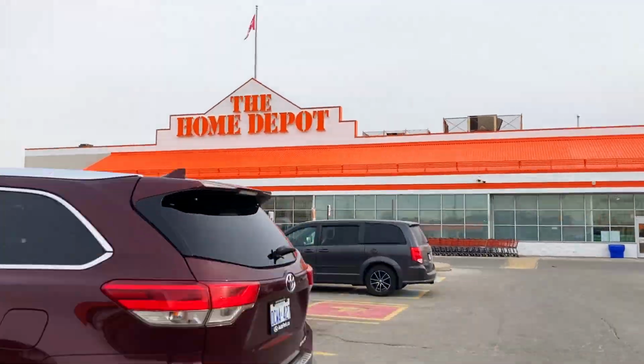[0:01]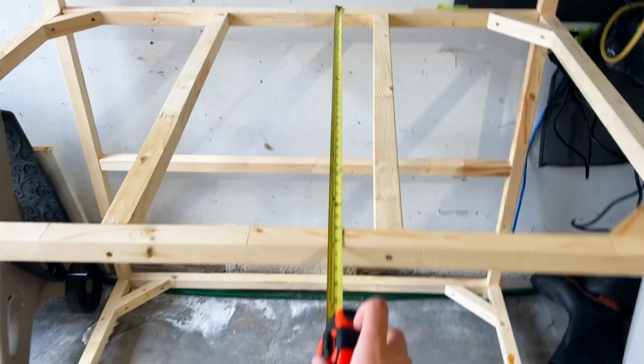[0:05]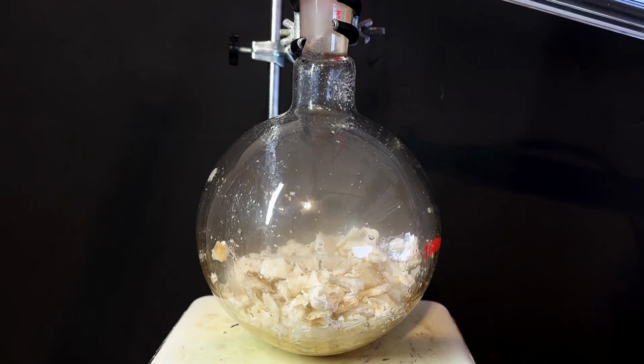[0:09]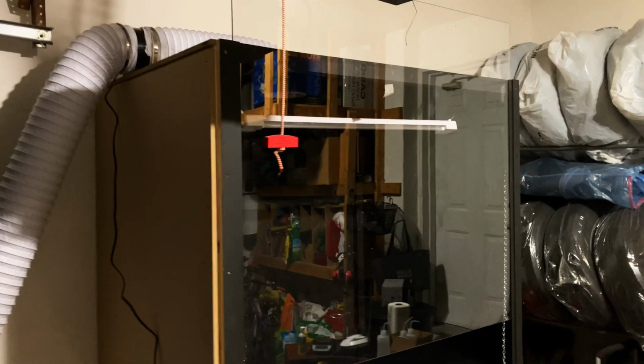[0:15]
So for a while now, I wanted to get an actual functioning fume hood to do my chemistry experiments in, because many of them were actually kind of dangerous with a bunch of toxic vapors. I decided to build a massive one entirely from scratch, with the help of some trips to Home Depot. So let me show you how it's done.
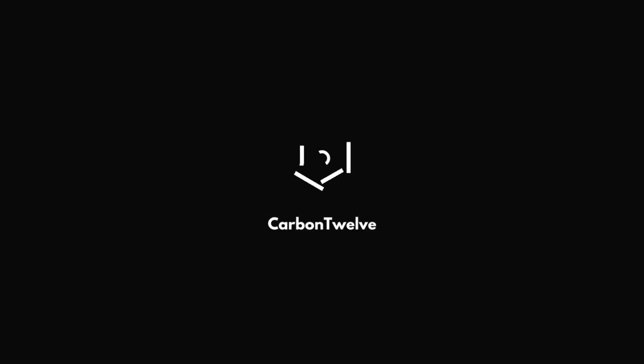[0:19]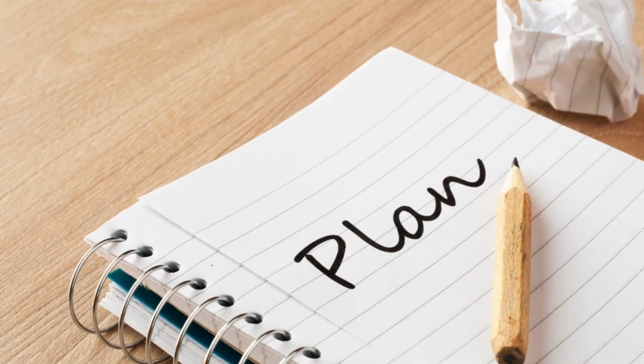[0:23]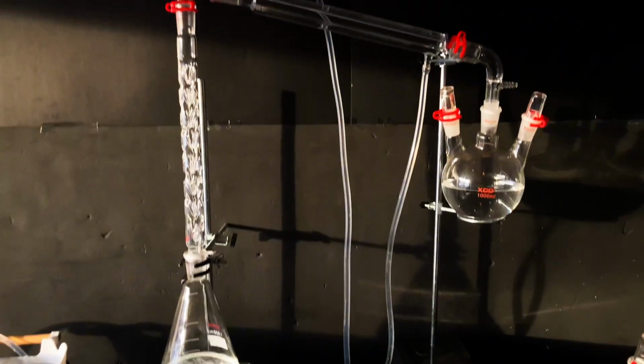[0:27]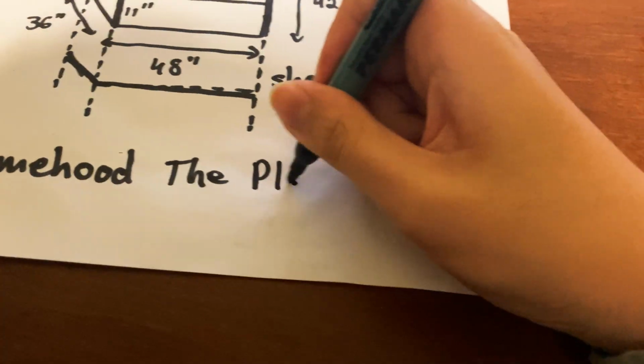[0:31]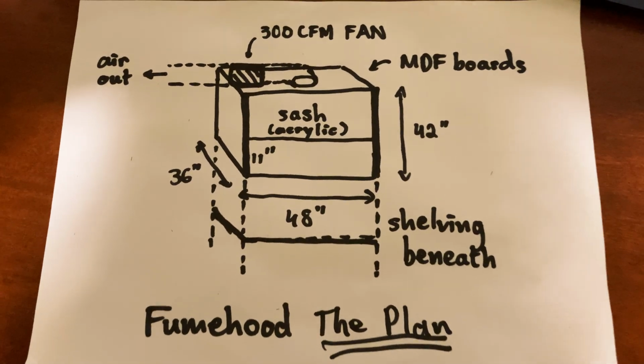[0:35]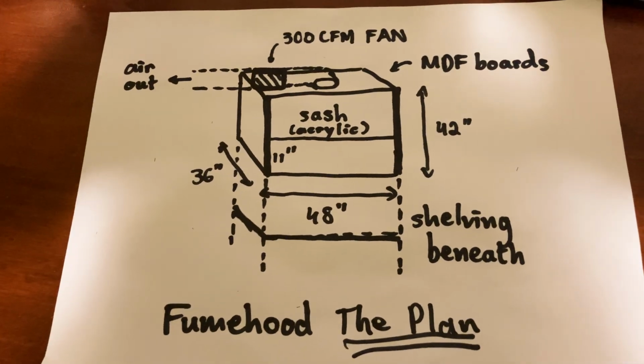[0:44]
First off, I needed a plan for my fume hood, and I decided that I wanted mine to be huge in order to be able to fit in a full fractional distillation setup. Thus, after scribbling and brainstorming a bit on paper, I came up with this as the game plan, which is a rectangular prism with 42 inches as its height, a width of 48 inches, and a depth of 36 inches. This is definitely very spacious for a regular fume hood.
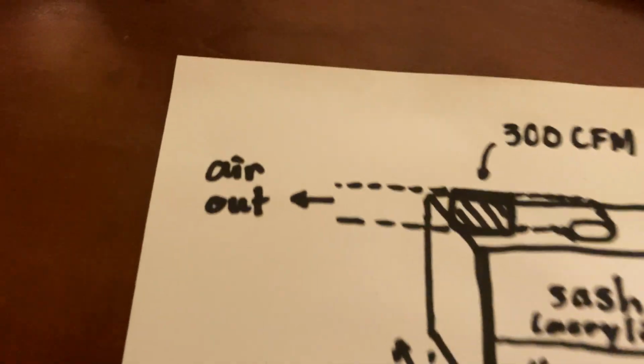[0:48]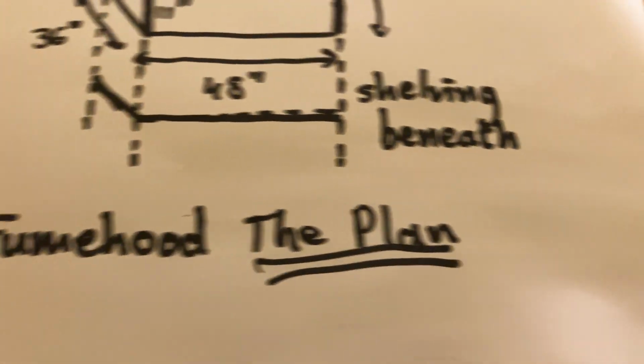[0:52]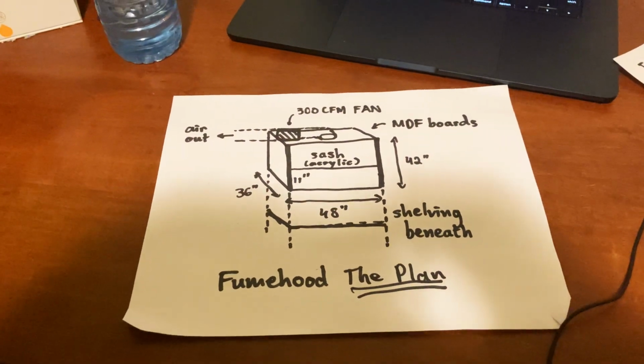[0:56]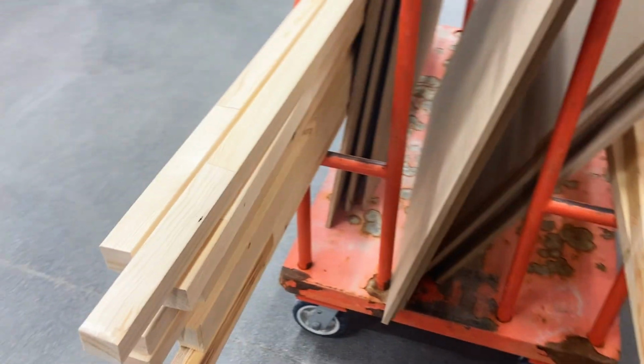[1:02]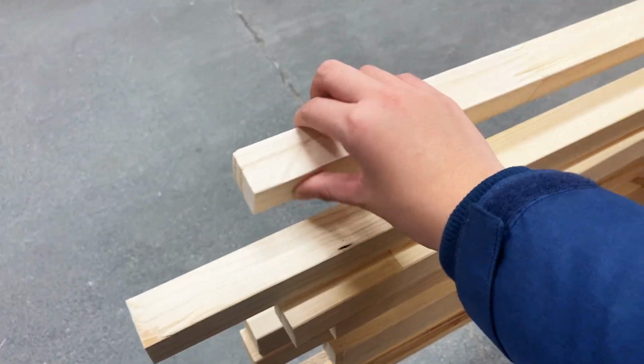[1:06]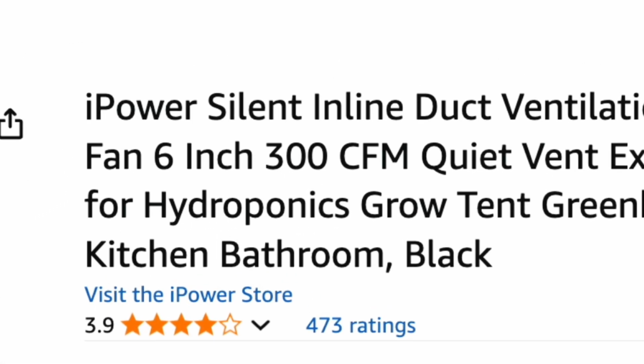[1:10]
Planning this out took longer than some of my actual experiments and more brain power, not gonna lie. Honestly, I probably should have studied architecture. I equally wanted to use some galvanized square steel for this project, but I realized it's too expensive. Anyways, other than the fiberboards and wooden beams that I needed to get from Home Depot, I also needed to get the most important part of the fume hood. I went with a 300 CFM fan due to the massive size of my fume hood.
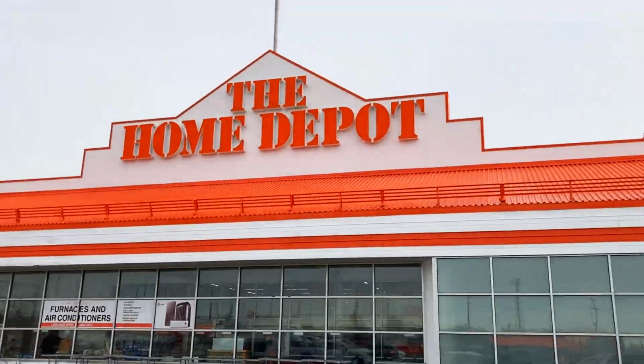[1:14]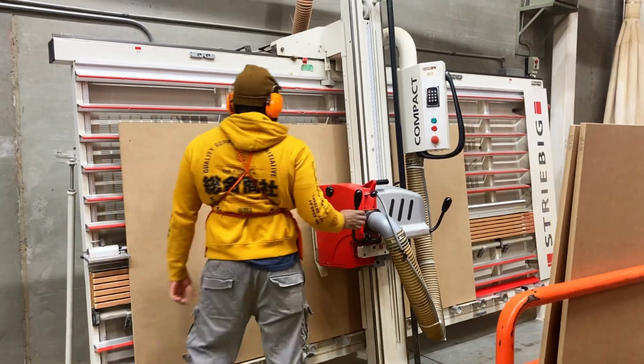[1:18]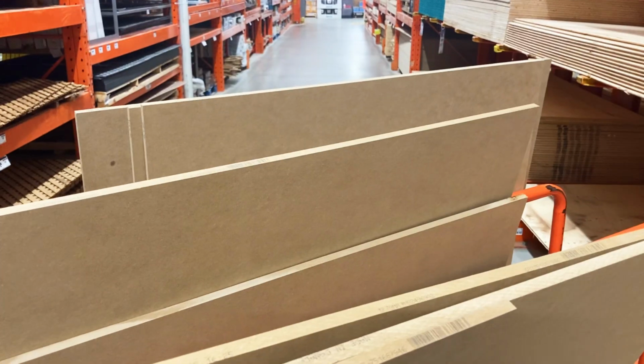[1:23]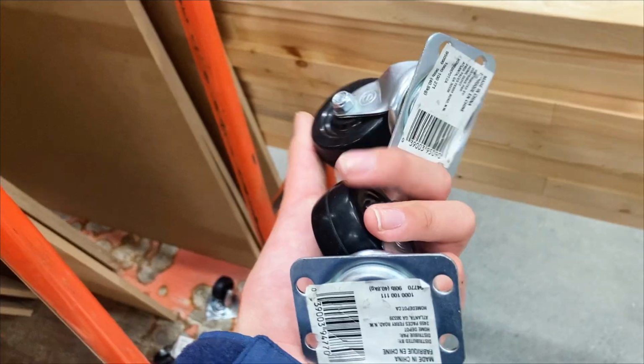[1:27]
Now it's time for a trip to Home Depot. I finally got a ton of fiberboards and got it cut there to the desired size. There were also some tools at home if I needed to correct anything at the last minute. I also needed to get some wooden beams as the supporting frame of the fume hood, as well as some wheels that I can attach to the bottom so the entire structure can actually be moved around easily.
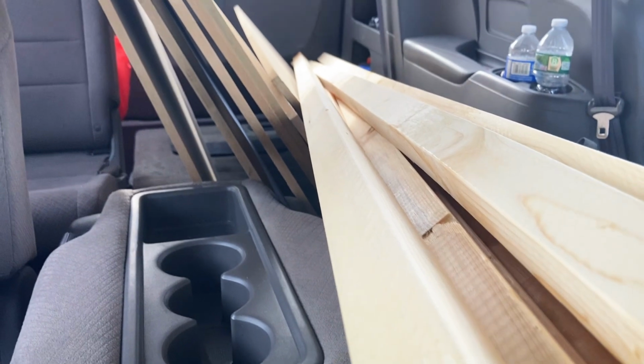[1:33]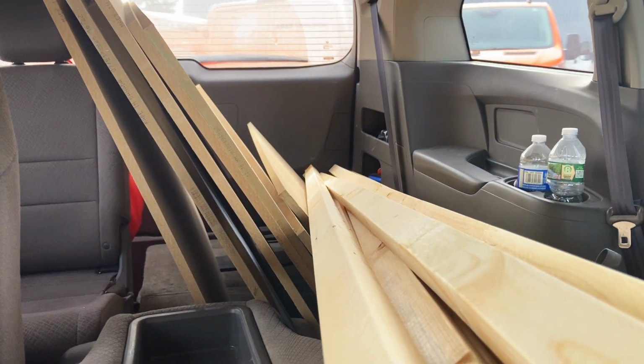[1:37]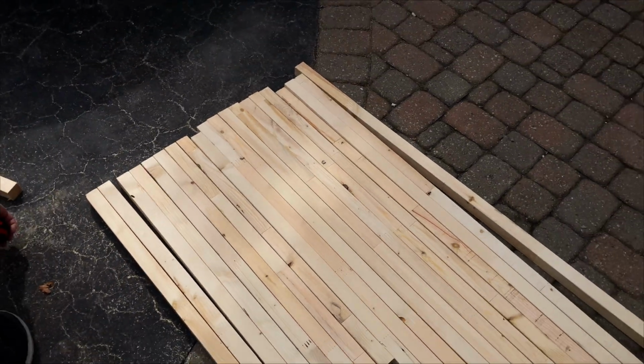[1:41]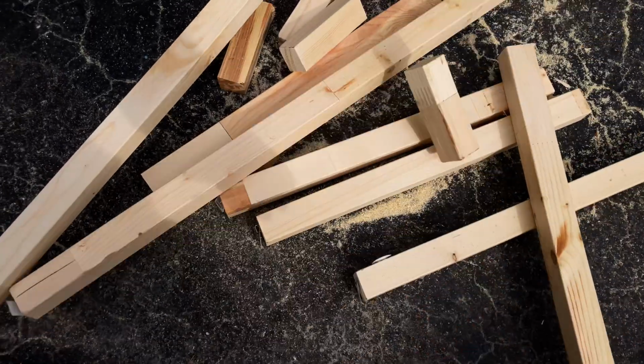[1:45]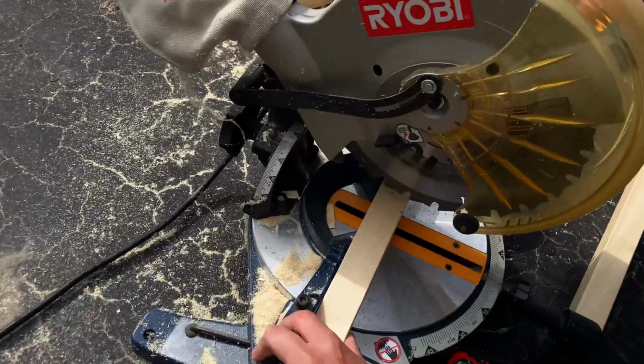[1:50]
After heading out, I definitely overestimated my ability to carry all of this stuff out of the store. It was difficult, but after putting everything in my car, I can actually get to the fun part, which is to actually build the thing. A huge thanks to my dad, because this wouldn't have been possible without him, as he taught me a lot about woodworking and helped in steps along the way.
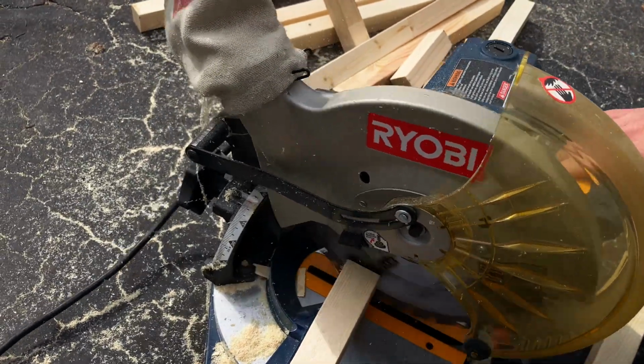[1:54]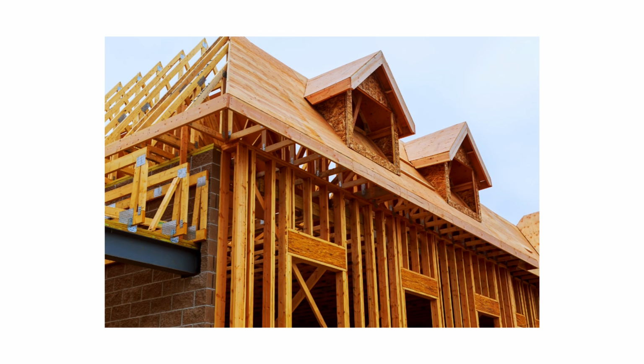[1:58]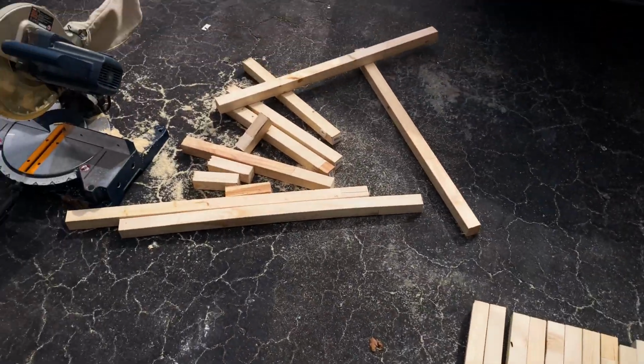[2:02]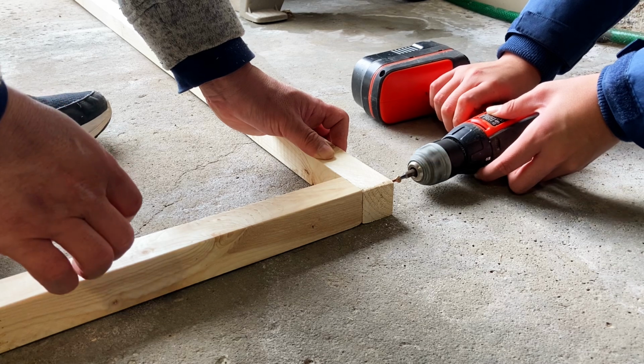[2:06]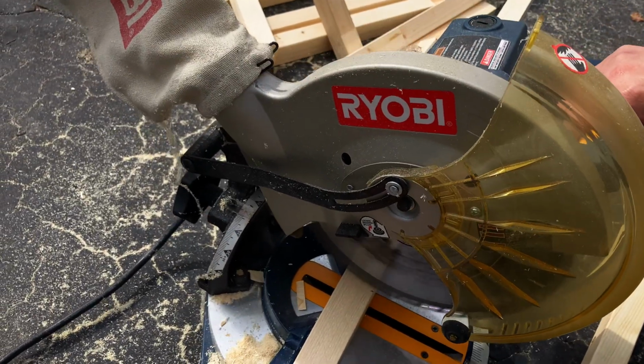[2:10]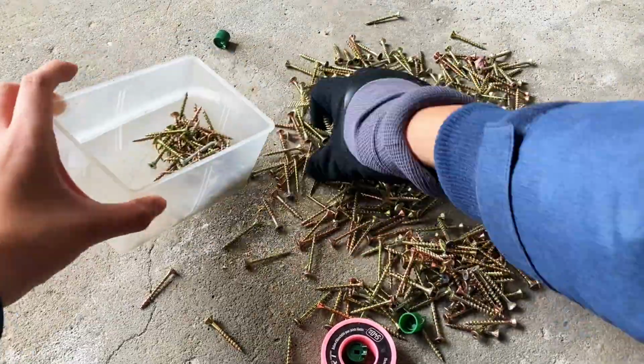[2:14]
Often, when trying to build a structure, you've probably seen construction workers building houses by making a frame first, and that's exactly what I'll be doing. Because, as you might have known, butt joints are weak. Thus, grabbing some wooden beams, they were cut to the desired size with my dad's saw for the frame, and this already took a while, to be honest. When these were finally finished, I got a big box of screws from my aunt for the next step.
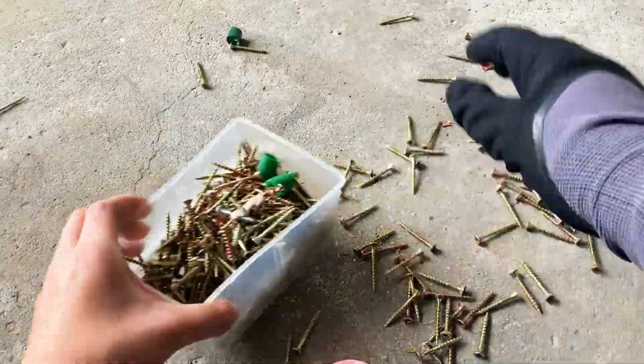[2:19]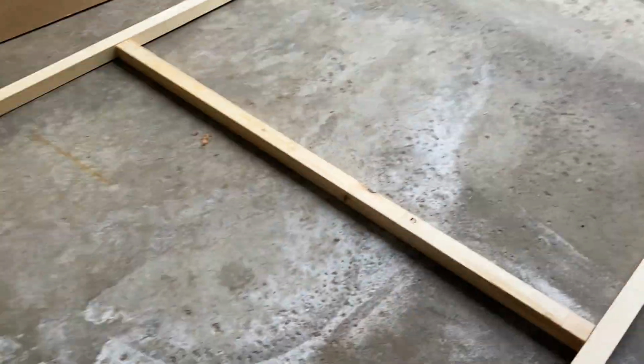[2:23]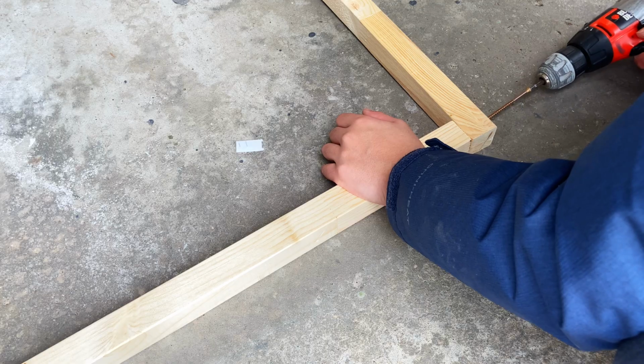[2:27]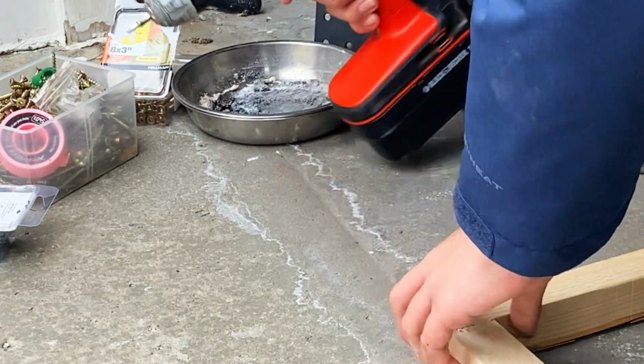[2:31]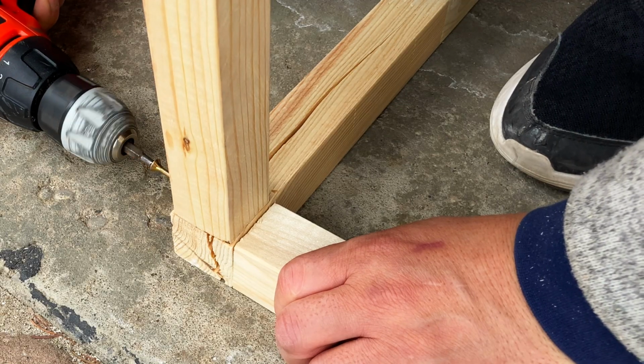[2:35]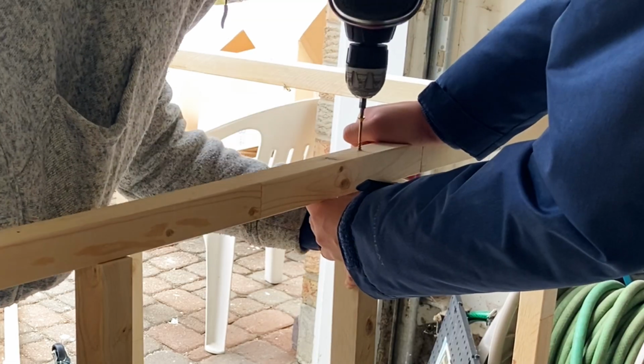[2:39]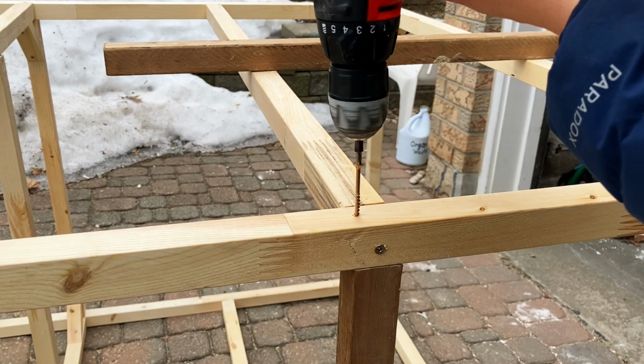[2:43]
Then, I started to screw around, literally, by inserting screws at the connection of each joint of the beams. This part was actually quite fun, and I got my hands on an electric drill which does the job pretty quickly. Now the frame was built so that, in the later phase, I can then screw on the main MDF boards, but before that, I decided to add some beams to the fume hood surface. I also wanted to add another layer beneath as extra space to store my chemicals and tools.
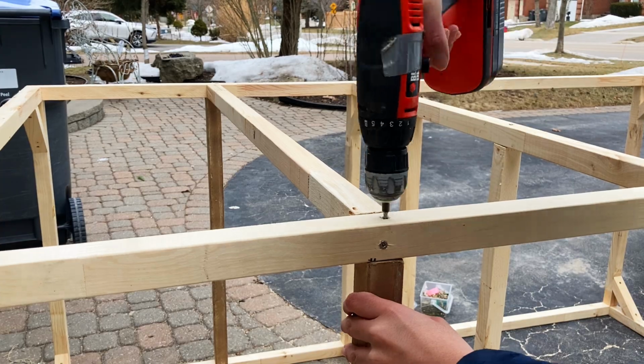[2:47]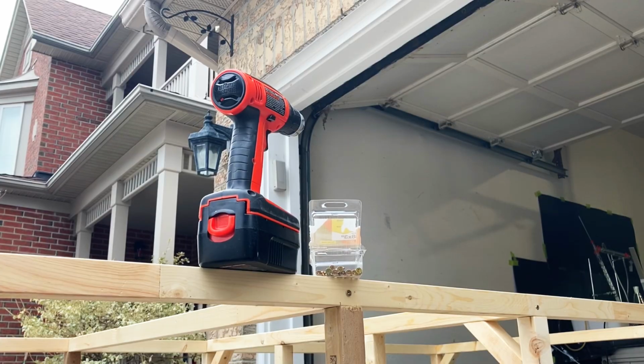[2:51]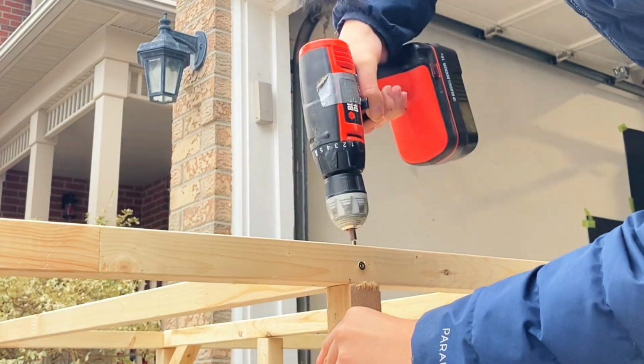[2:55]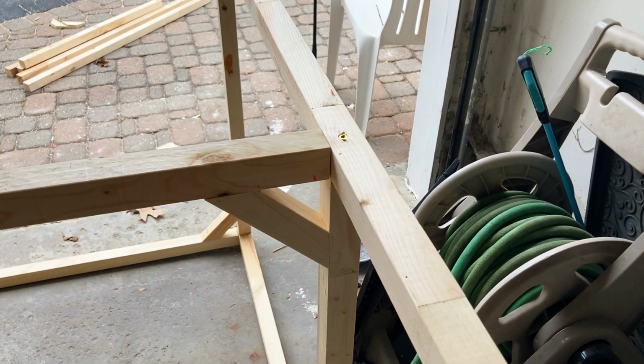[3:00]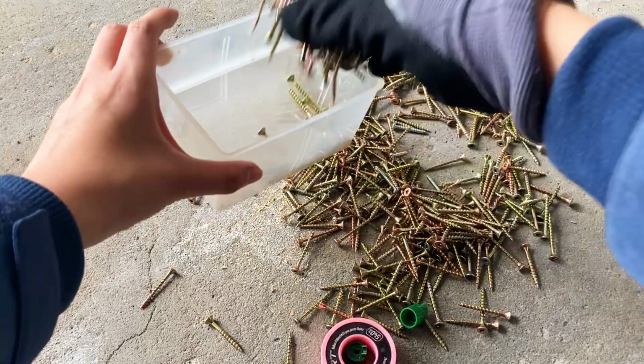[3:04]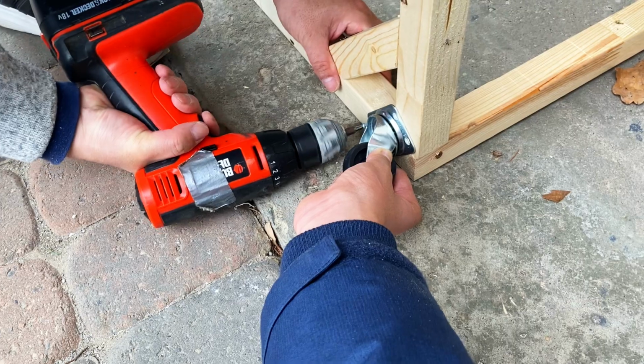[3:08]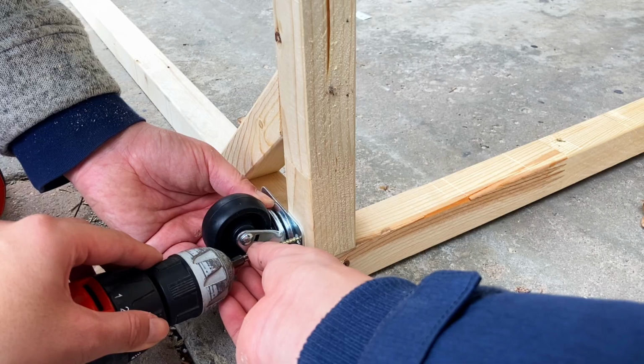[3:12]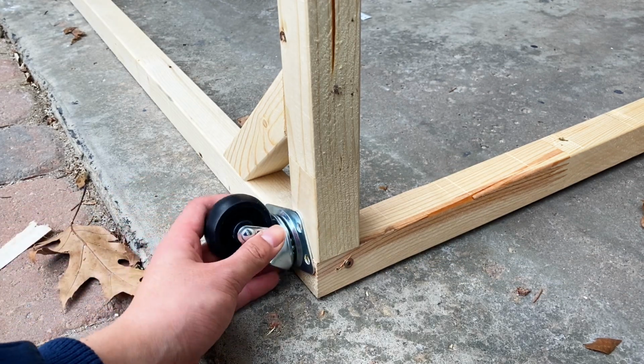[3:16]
Now when the frame is about finished, I can then add on some corner brackets to support each of the joints. These were screwed in with some more nails for extra strength. Now, I can finally say that the frame was done, so it's time to attach the small wheels so that I can actually roll this heavy thing around. Adding wheels was necessary, because otherwise moving this thing would be equivalent to a full body workout.
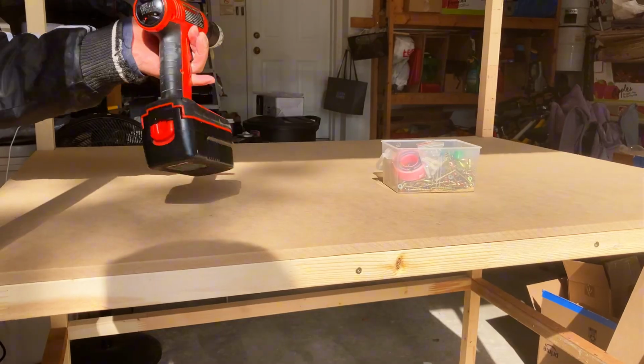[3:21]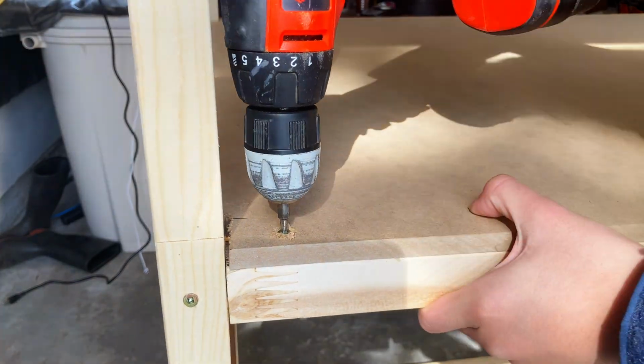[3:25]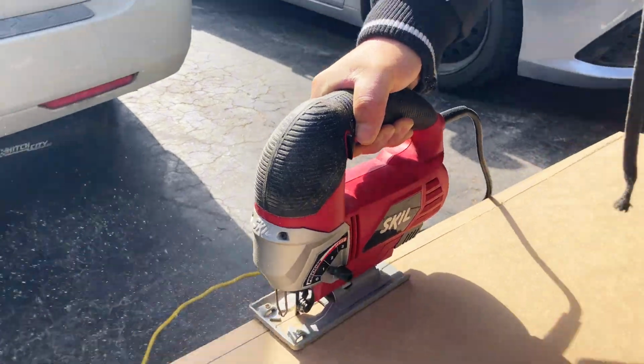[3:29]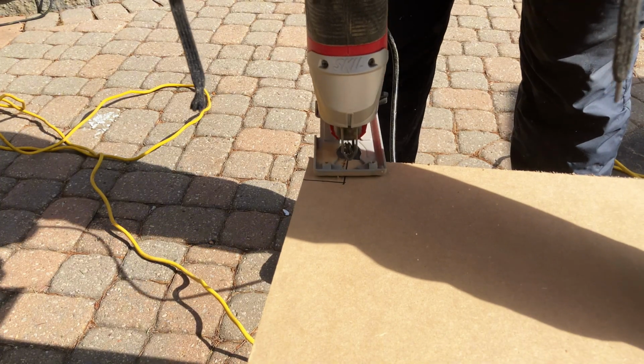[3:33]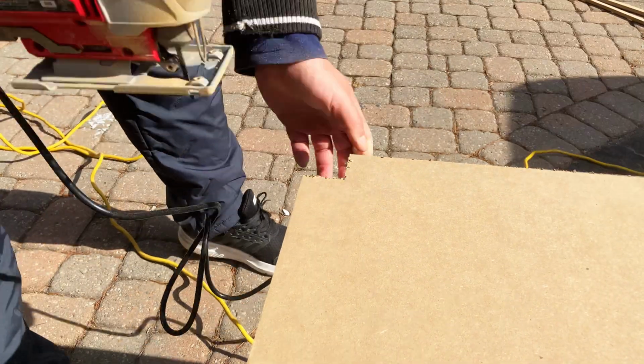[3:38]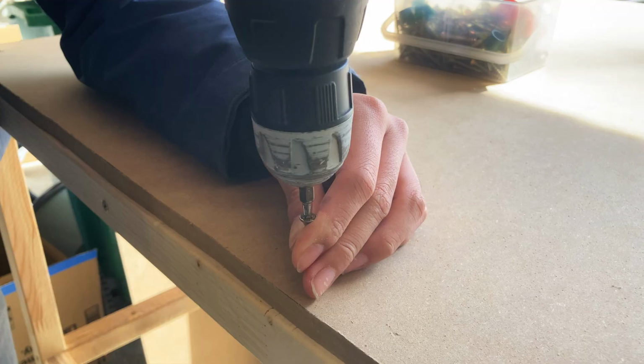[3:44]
The MDF boards can then be attached to the five sides, and they were attached with some more nails screwing it tight. Here, you can see that some of them actually had to be cut and corrected a bit so that they can actually fit onto the frame. The first board that I attached was the bottom surface, or the workspace. And since I had 1.5 inch square beams on each of the four corners, these were drawn and cut out. I could then place this huge board on top and get to screwing the sides.
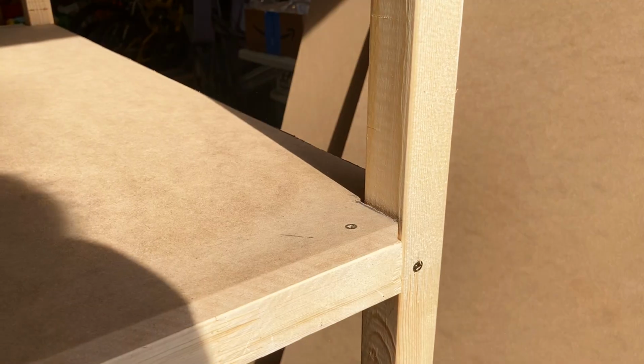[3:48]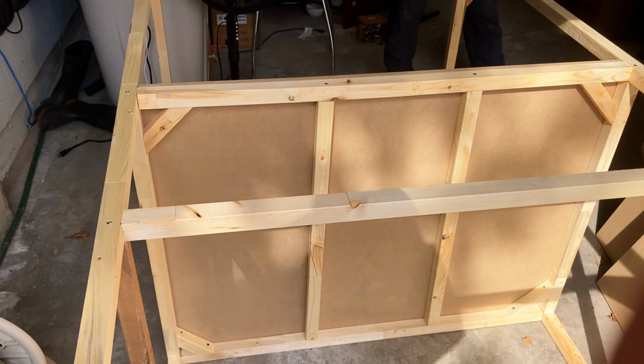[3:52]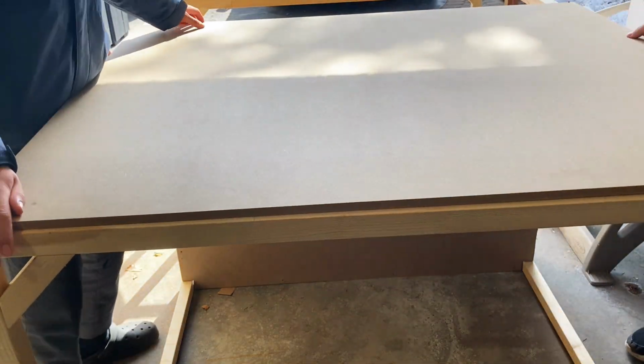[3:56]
When this was all done, we got to fixing on the back board, again, by trimming it a bit, turning it around and placing it on.
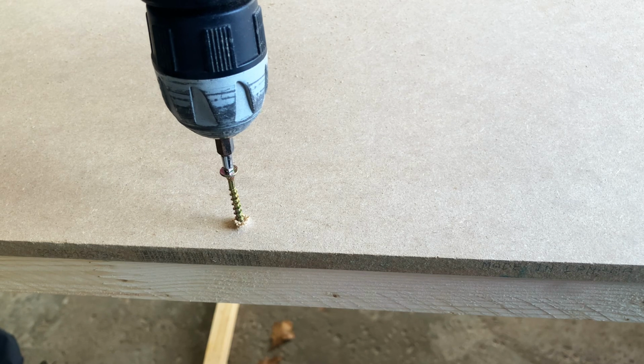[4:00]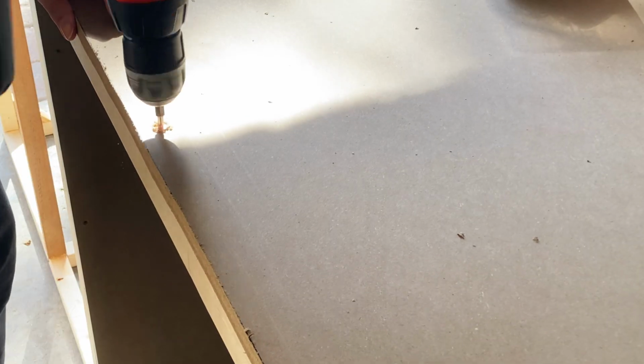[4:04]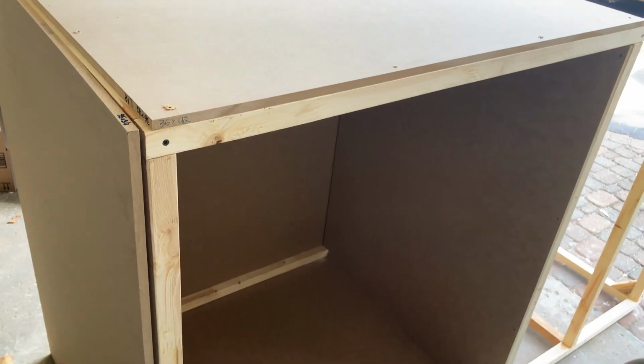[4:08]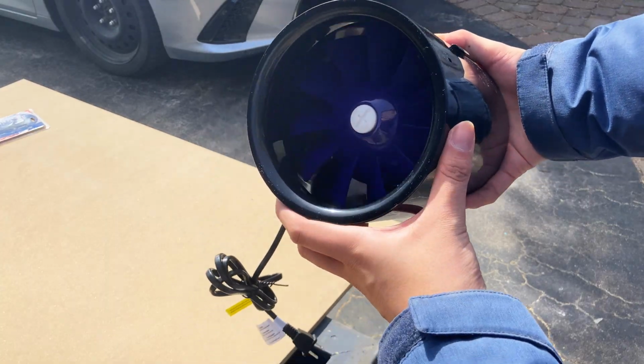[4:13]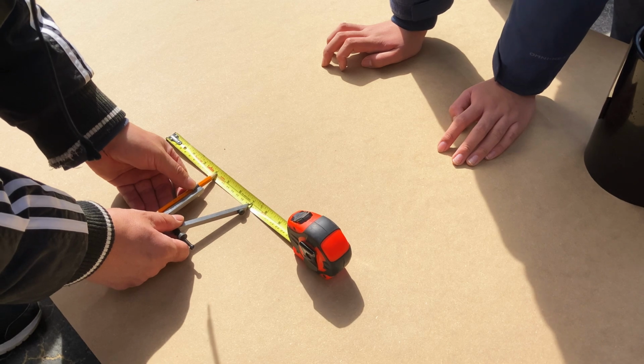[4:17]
Four of the sides were done, and now I just have to use a compass and draw a nice round hole slightly towards the back of the top board with a 6-inch diameter for my ventilation tubing adapter. See, I knew geometry in math class was going to be useful someday.
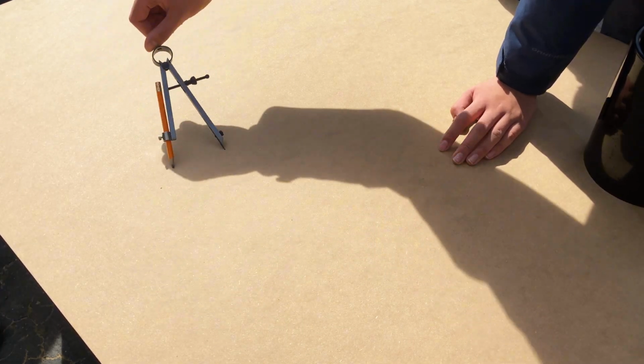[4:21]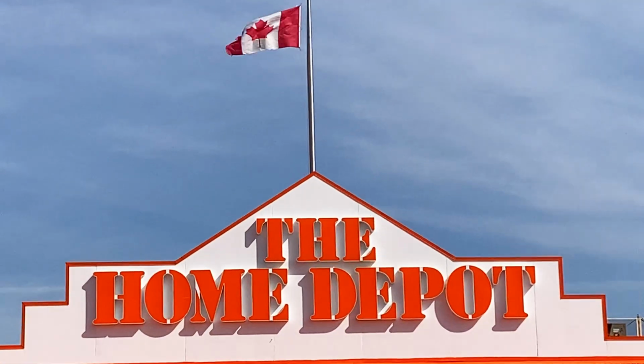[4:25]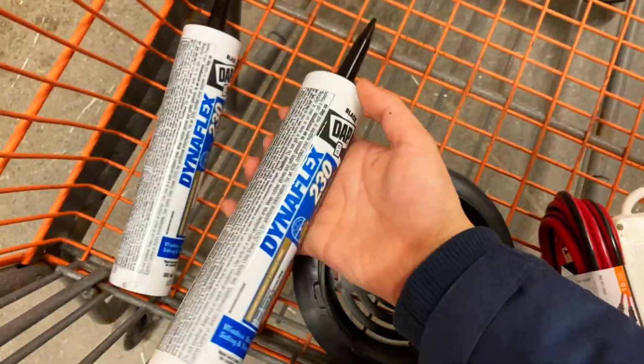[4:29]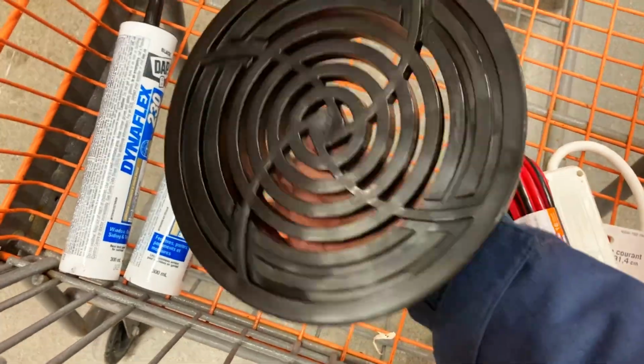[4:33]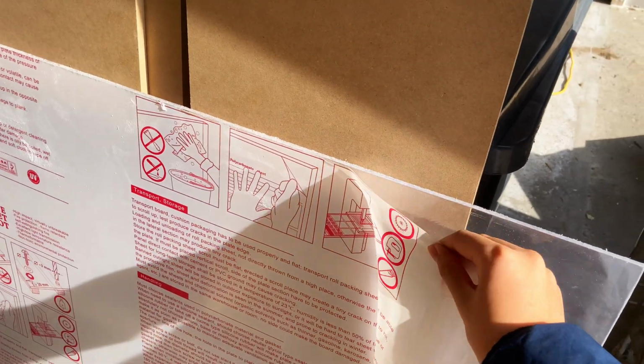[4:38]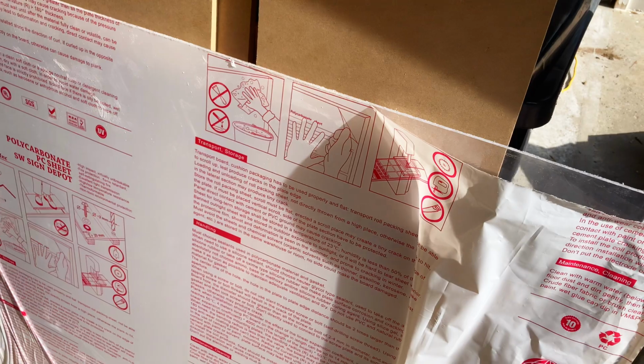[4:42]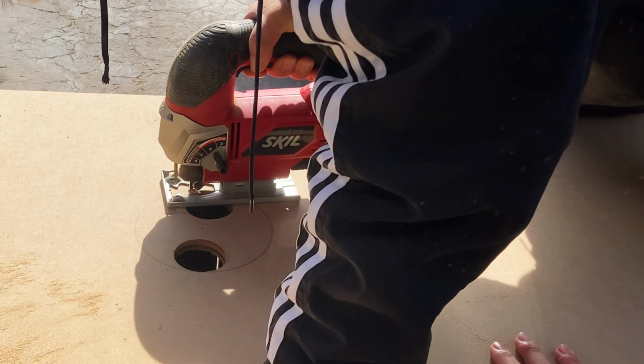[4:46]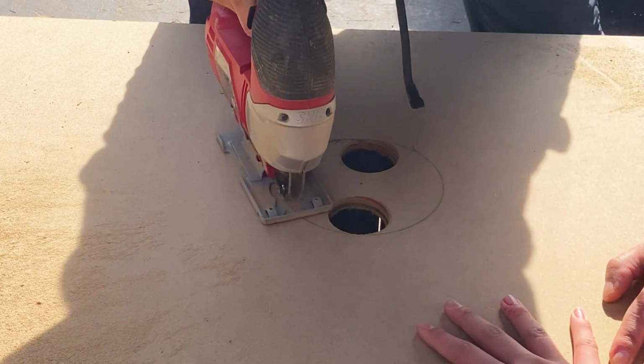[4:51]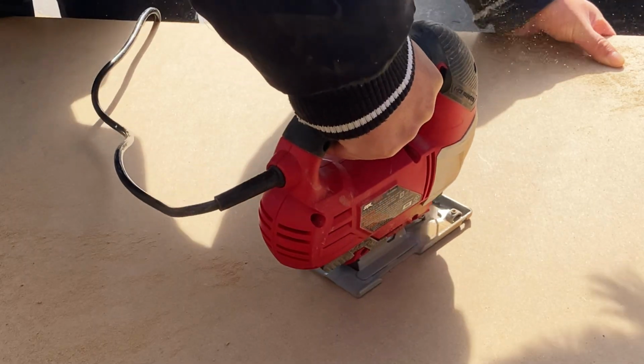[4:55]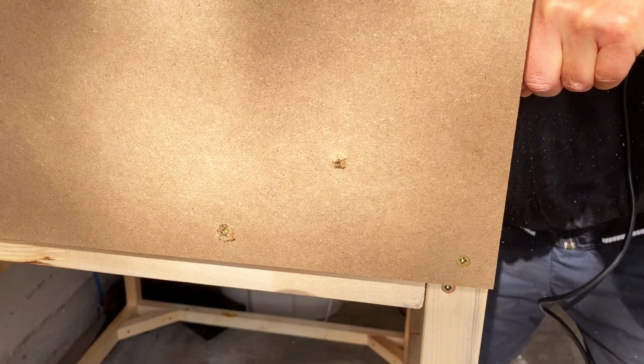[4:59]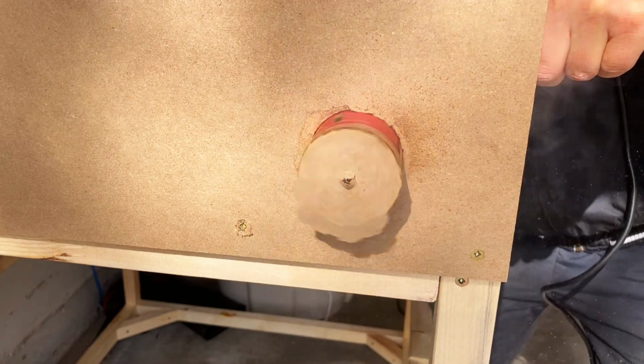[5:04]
After drilling two small holes on our top board with the help of a hole saw, the 6-inch diameter hole was then cut out with a jigsaw. When the round circle was cut out, I realized that I guess I am too cut out for this. Back on the sides of the fume hood, on the left, I drilled a small hole to fit in all of my power supply.
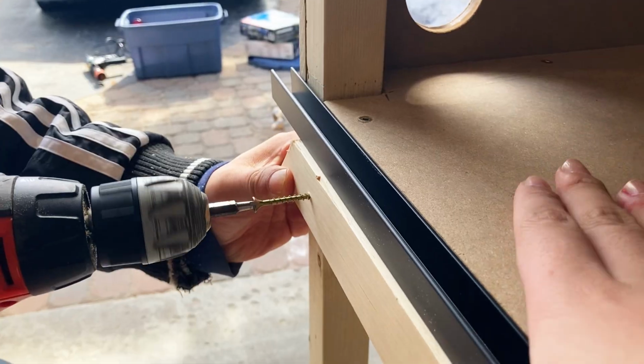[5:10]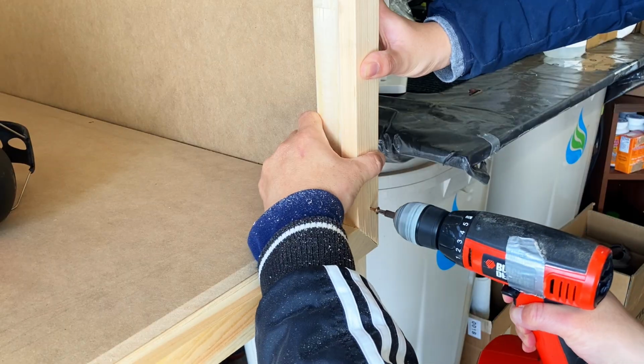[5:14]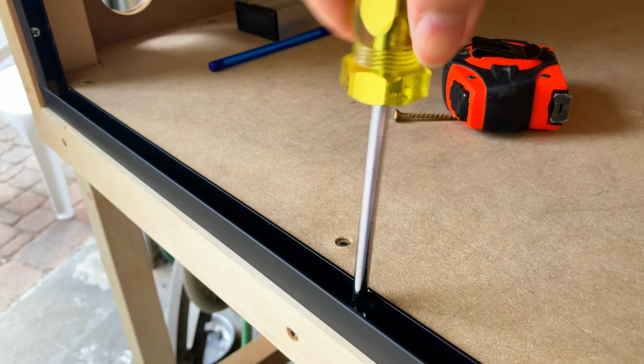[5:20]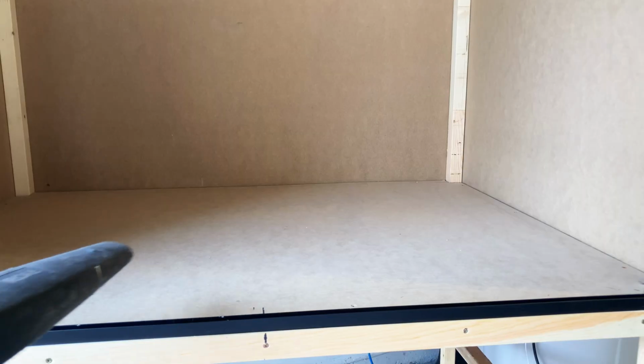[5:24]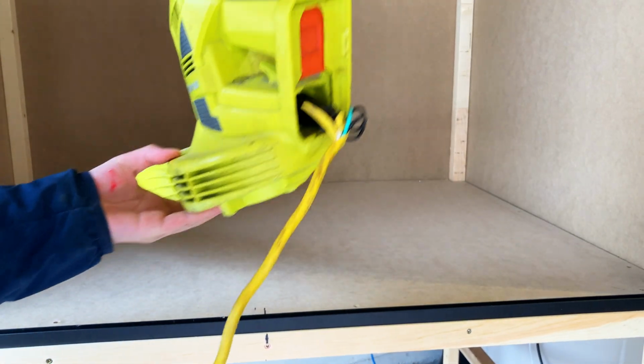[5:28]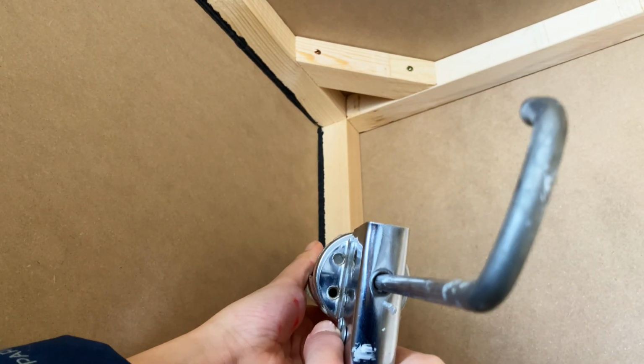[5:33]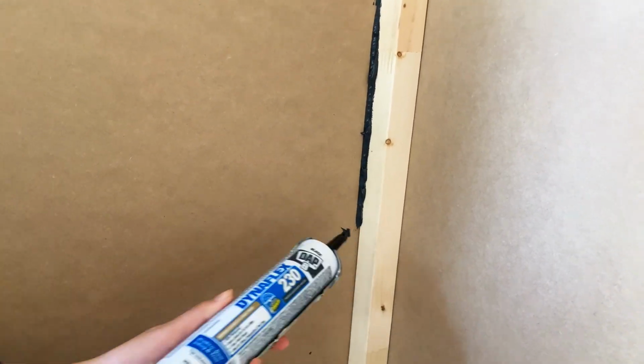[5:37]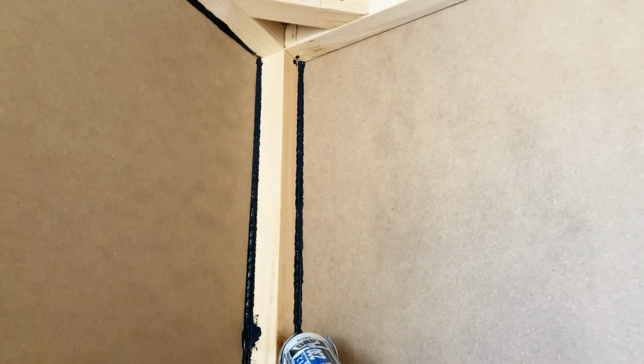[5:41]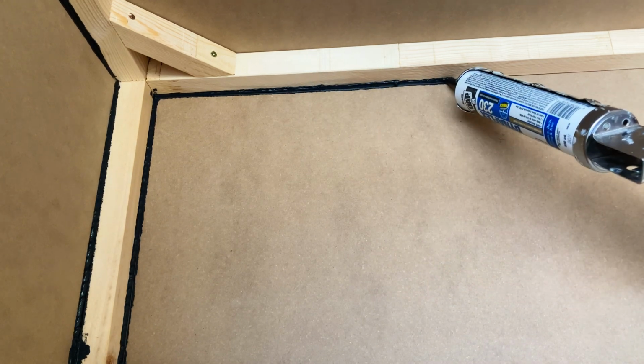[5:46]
After vacuuming the inside, I can proceed to the next part. I know, there's been a lot of steps already, but now what I have to do is put on our adhesive silicone glue bought from Home Depot onto each of the edges where the fiberboards meet. This helps keep our fume hood airtight and maximize the airflow at the opening of the sash, but honestly, I could have gone without it. I'm not sure how much it might have helped the fume hood. It kind of reminds me of frosting a cake. I have no idea why.
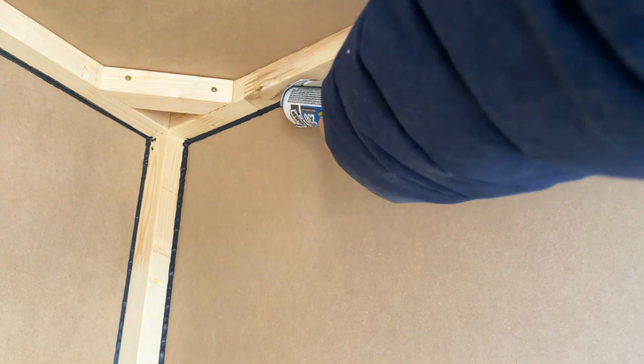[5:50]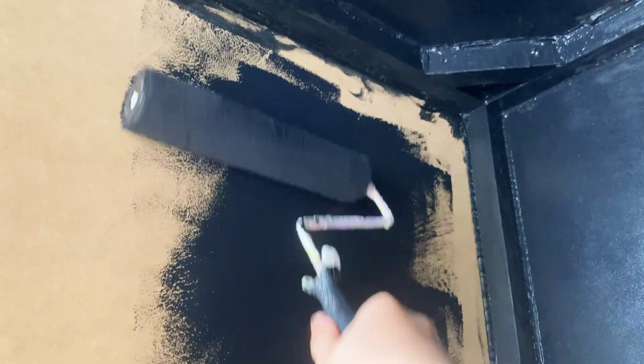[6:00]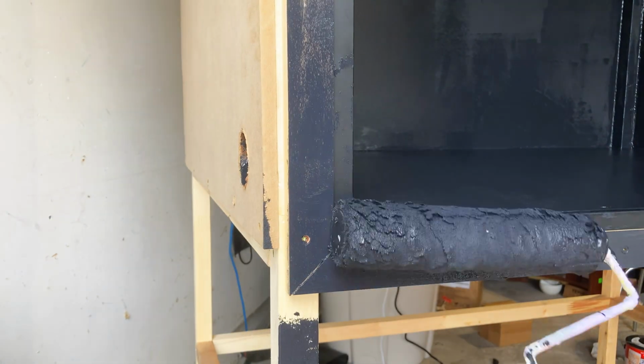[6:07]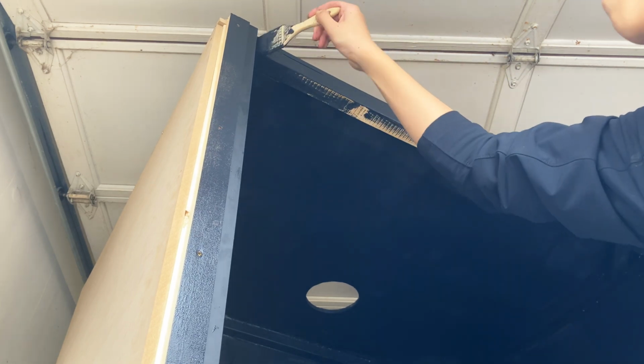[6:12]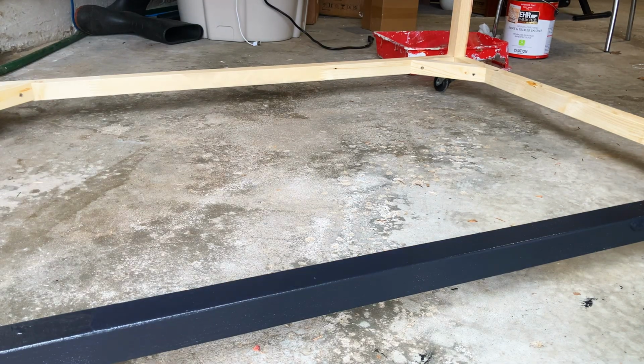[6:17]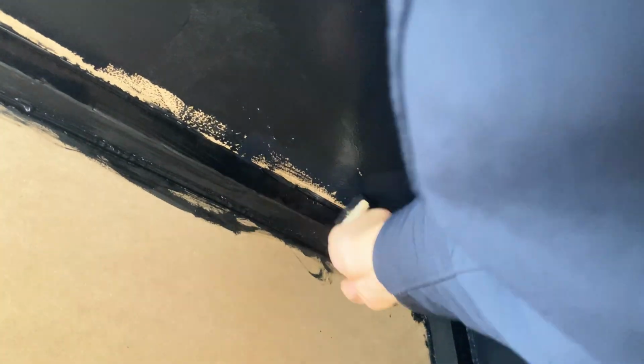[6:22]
After waiting another day for all of the glue to dry, I can then start painting on a matte layer of black paint I got from Home Depot again, and I can start off with the corners and the frames with a small paintbrush, then work my way towards the larger surfaces with a big paint roller. Some of the outside, like the legs of the frame, were also painted in black since I felt like it. When this is all dried, I can then put on a second coat of paint just to make sure that everything was nice and covered with a good seal.
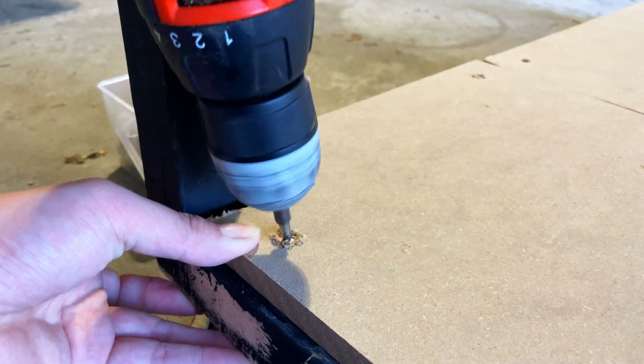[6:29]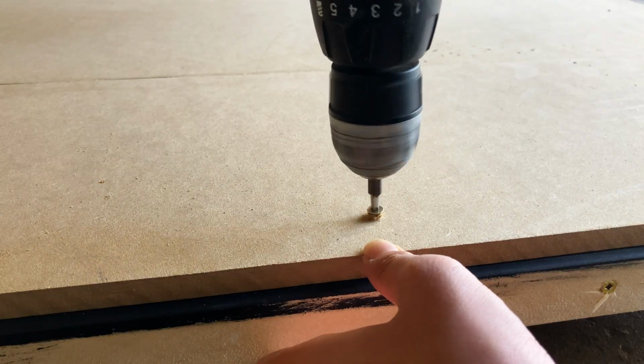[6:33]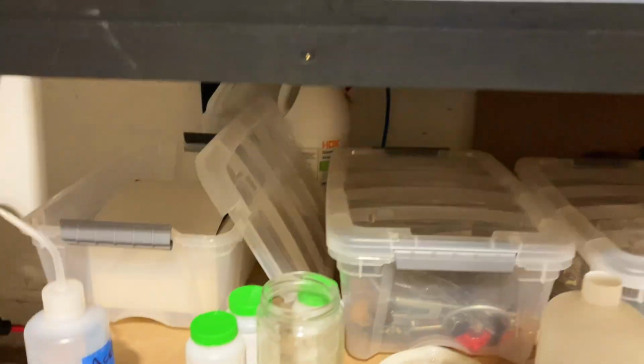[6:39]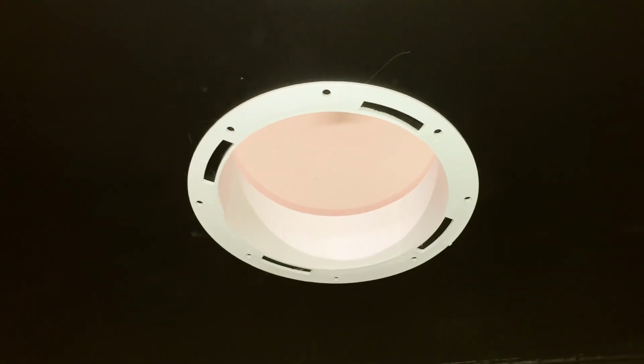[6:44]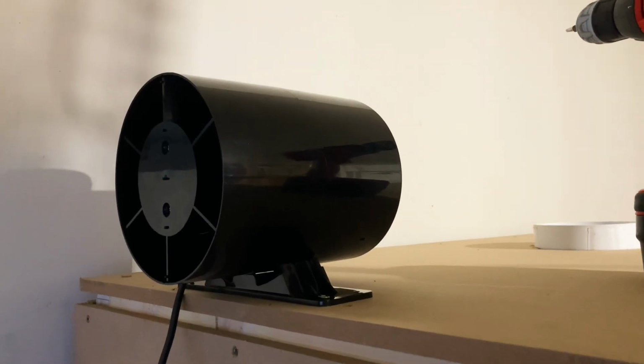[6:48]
Now the last step is to add on the boards for my bottom shelves, which I again screwed on. On the bottom shelf, I put into boxes my reagents like acids, bases, and oxidizing agents, as well as some alcohols. On the top, I have all of my glassware as well as tools. Moving back onto the top, my 300 CFM fan was then installed at the left, and all of the tubing connected as you can see here.
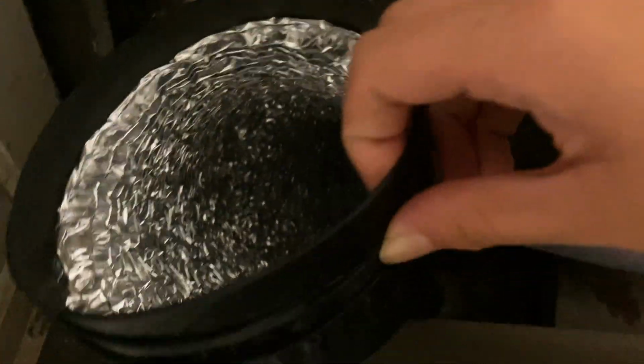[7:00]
Now the tubing I used was 8 meters long, however it does have a metal-like coating, I think aluminum inside of it. Thus, I might have to think twice about expelling vapors like bromine, which could react, or acids, which could corrode it. The last thing I added was an optional chain hook mechanism for keeping the sash in place, but I really don't think it was that mandatory because I did install some small nails that the board can latch onto on the sides.
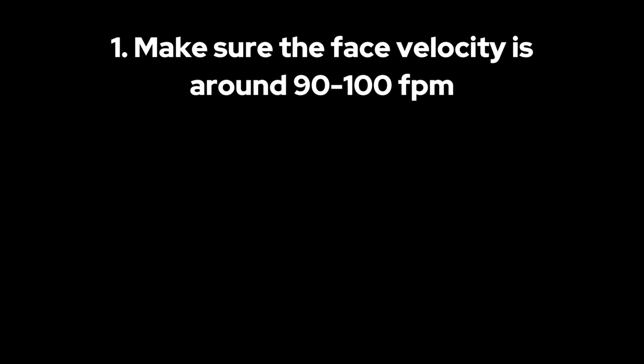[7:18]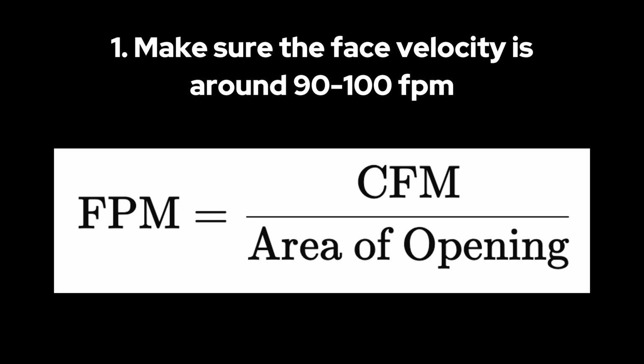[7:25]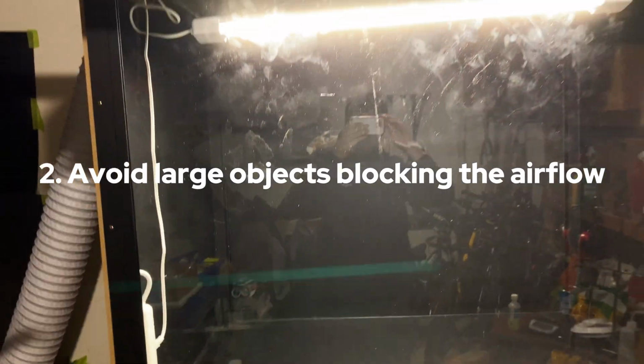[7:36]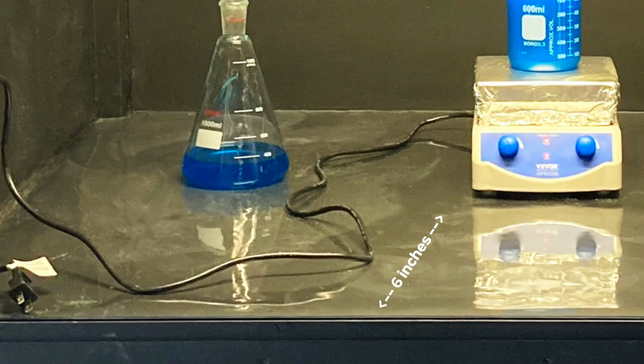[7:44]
Now a fume hood's all about the airflow, and here are some important tips if you want to construct your own. Make sure the face velocity is around like 90 to 100 FPM, and you can calculate that with this formula, which involves the CFM of your fan, as well as the area of your opening. I calculated mine to be around 10 inches to 12 inches. You also don't want to put large objects in the fume hood, as you want the airflow to be as laminar as possible, and often objects like hot plates are even put onto lab jacks. Also, all objects should always maintain a 6-inch distance from the opening.
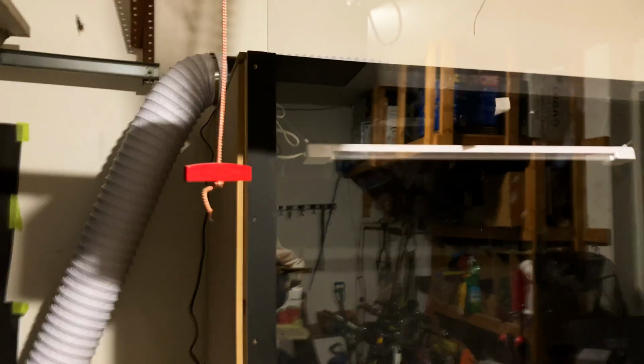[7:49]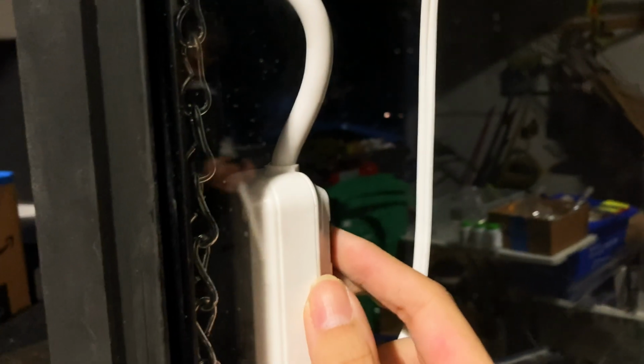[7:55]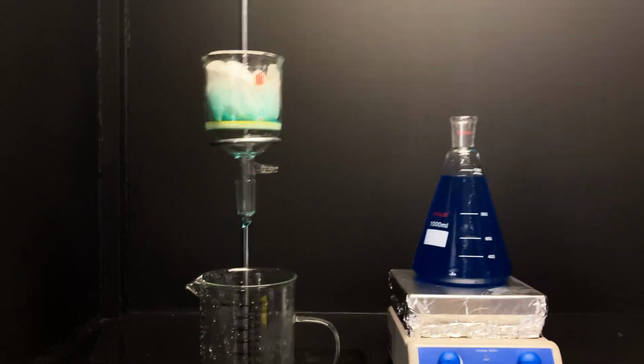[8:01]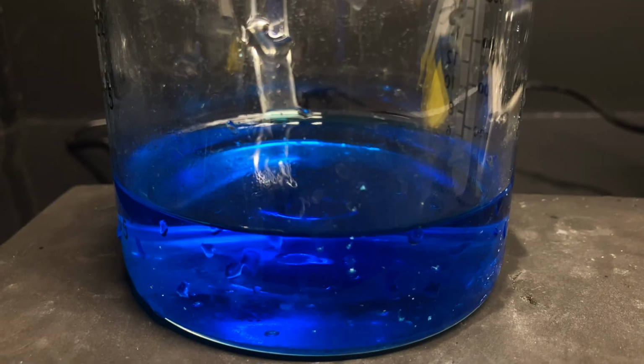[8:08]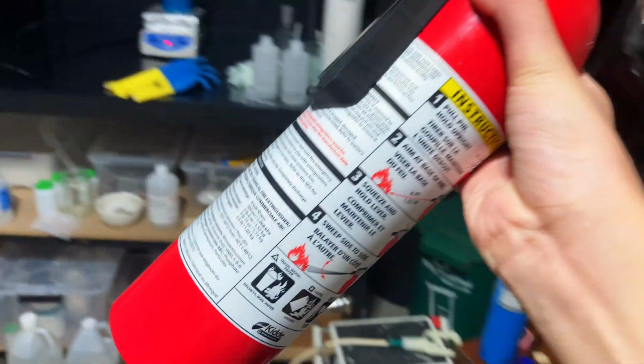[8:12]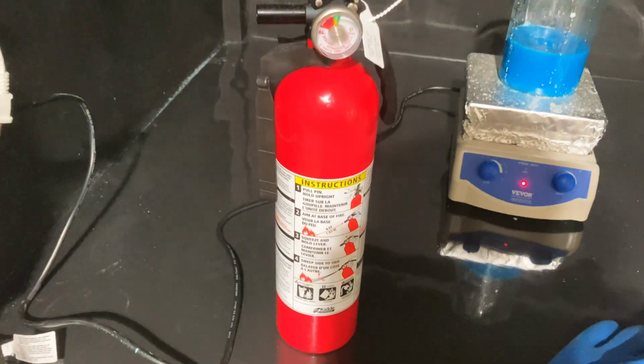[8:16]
So yeah, I gotta say, I think this fume hood was a pretty big success. It definitely made my lab a lot safer, and when I tested it out by burning some smoky paper, there was basically no smoke smell in my lab, and all of it was sucked upwards. Now, there may be some concerns over flammability, but I won't be doing anything too crazy in it. There's also multiple layers of paint, as well as a plastic coating, so I don't think there's much to worry about. I will also keep a fire extinguisher nearby, just in case. I swear, before I know it, this could totally be sold as an IKEA item.